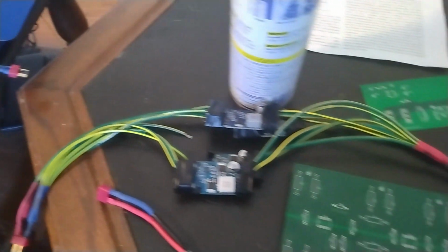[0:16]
Some people might say, Ivan, you didn't build a quantum computer, you built an NMR device. To those people I say, ¿por qué no los dos?
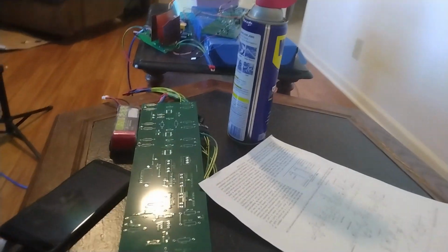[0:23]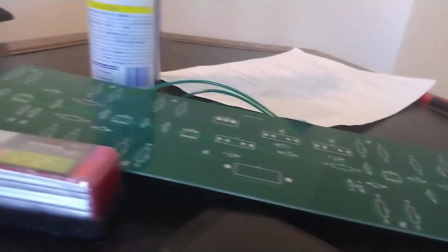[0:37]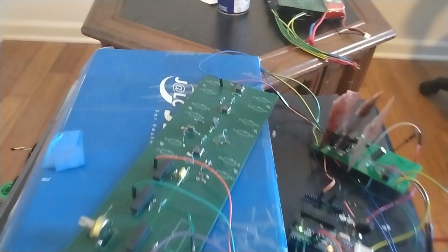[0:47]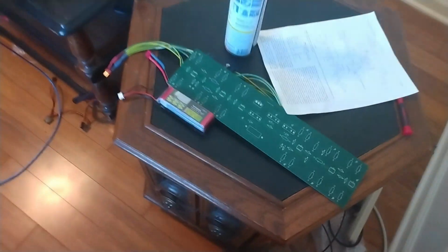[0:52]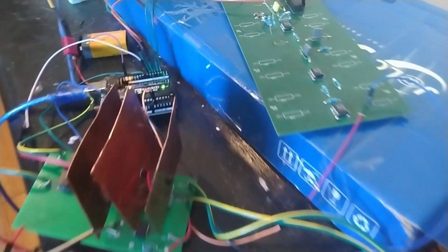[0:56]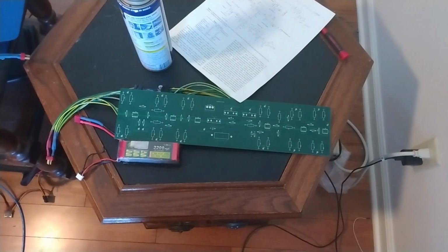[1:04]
Quantum computers you can build. There's a superconducting quantum computer, but that one requires liquid nitrogen or liquid helium. There's trapped ion quantum computers. Those require high voltages, dangerous voltages, and liquid hydrogen, liquid helium. And there's optical quantum computers, and those require single photon sources and optical tables, and they get pretty expensive.
But there is another type of quantum computer called an NMR quantum computer. In 2001, IBM used this quantum computer to factor the number 15 into 3 and 5. And it seemed doable to me to build something like this, but I wasn't sure where to start.
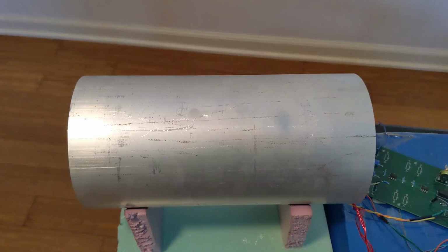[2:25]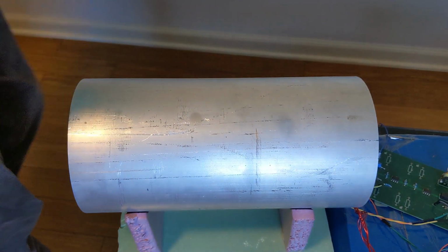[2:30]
So I looked around and I found this revolutionary paper by Professor Carl Michel. I hope I'm pronouncing his name right, from the University of British Columbia. He describes how to build an NMR device using hardware supplies and an Arduino. I contacted him, and he was happy to provide the software script to run on the Arduino. So the nuclei that we're going to be using as our qubits are the hydrogen nuclei in water.
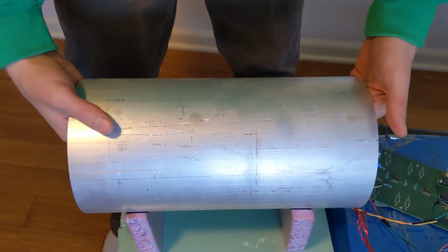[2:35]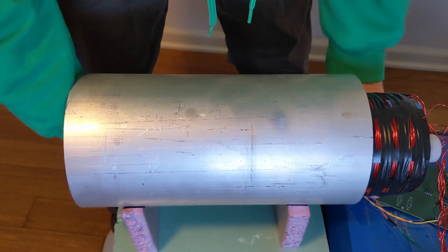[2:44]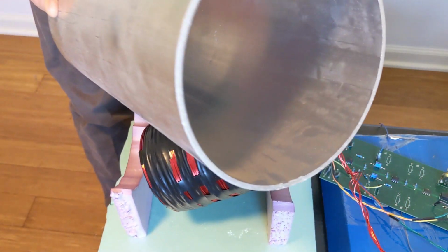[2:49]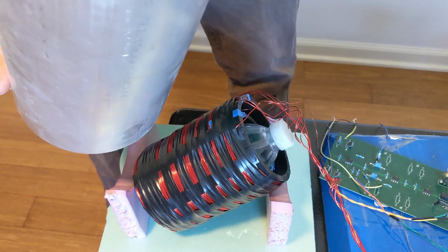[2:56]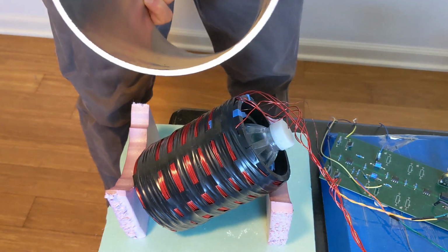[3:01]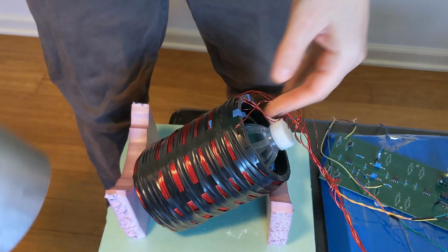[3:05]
So the water is held in this tank. Basically, it's a few layers in. The first layer is this aluminum Faraday tube, and that is about 2 or 3 millimeters thick. And if you look at the Q factor or the dampening for that, I think it removes like 90% of noise at 2 kilohertz. Don't quote me on that. And so, yeah, that helps keep the noise out.
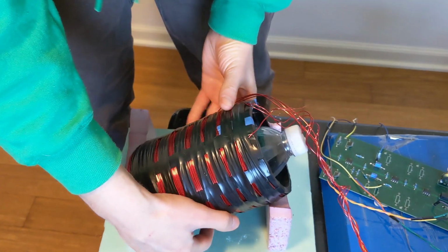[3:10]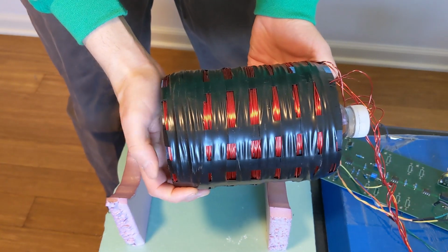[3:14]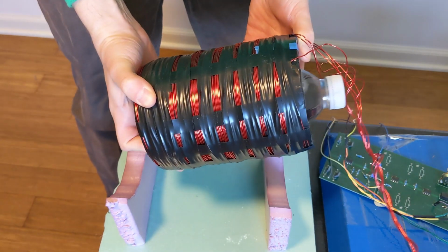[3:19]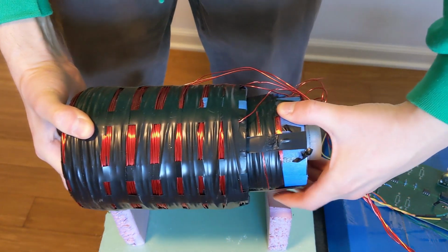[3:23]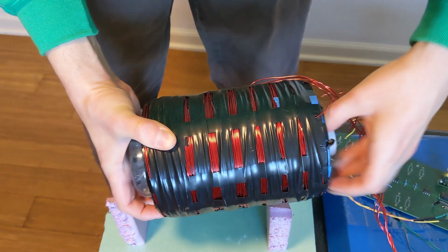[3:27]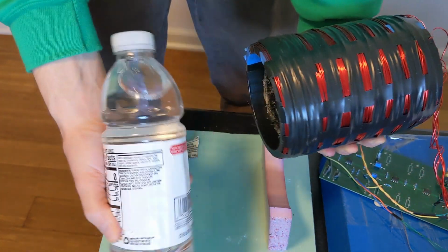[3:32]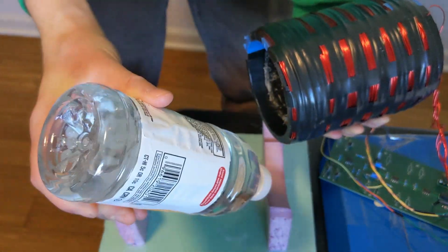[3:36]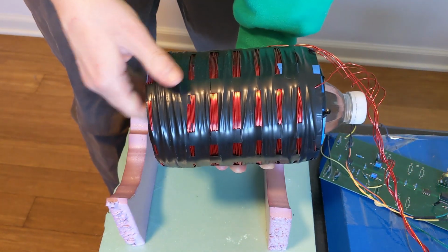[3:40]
Then we have the polarizing coil, which lines up the hydrogen nuclei. And then we have the transceiver coil inside of that, which we use to talk to the hydrogen nuclei. And then finally, we have the water, which the system is set up so that really any Gatorade style bottle will fit in here and it'll have the right amount of water, and you just kind of plug it in.
So the water at room temperature, the nuclei at room temperature, are scattered around willy-nilly. There's the Earth's magnetic field which helps line up some of the nuclei because they're kind of like tiny bar magnets, but they're still pretty randomized.
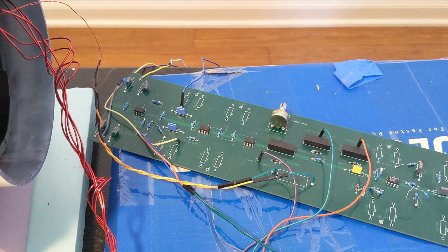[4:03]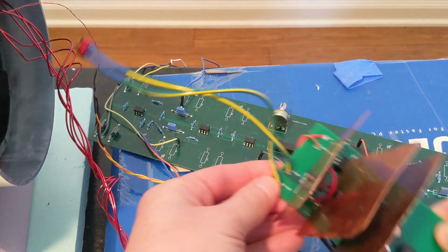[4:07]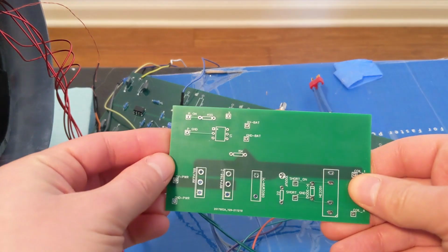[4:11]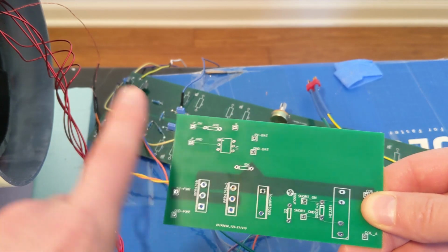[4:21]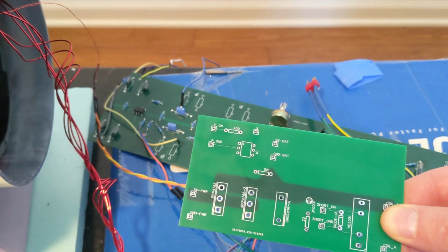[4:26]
So the first thing we do is we have this polarization coil, and here is a blank PCB for it. This section up here is for us to send commands from the Arduino, and then an optocoupler goes here, which basically just separates everything electrically so noise can't go back and forth, because noise is your worst enemy in this project.
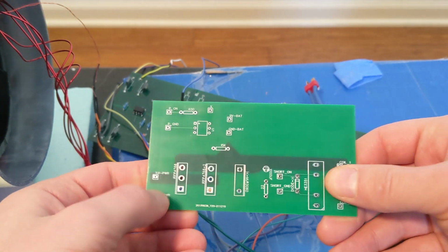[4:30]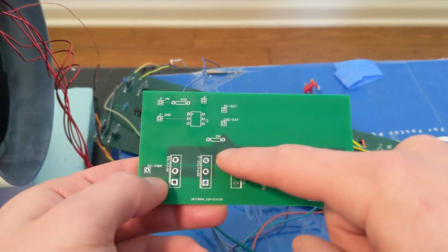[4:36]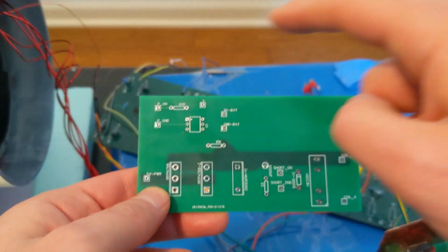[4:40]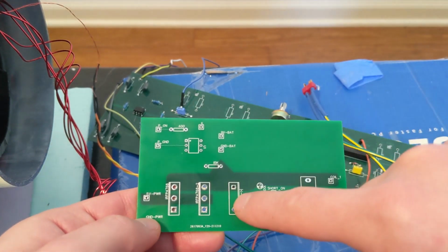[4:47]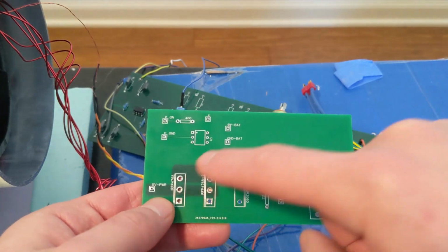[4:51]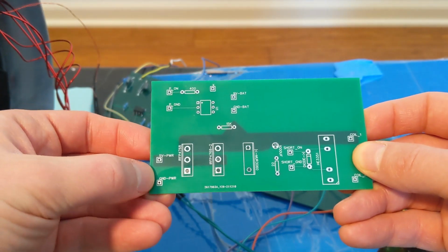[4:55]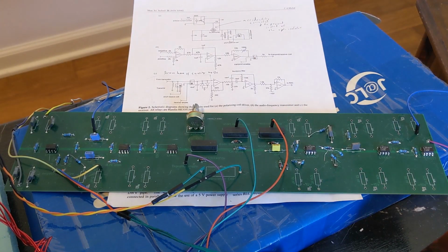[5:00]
And so then we put some FETs here. They're basically like electronic switches, and those switches let the small signal from the optocoupler from the Arduino control the large amount of power which we run through these thick copper lines, as you can see here. And that lets us take power in from our power supply, and then it sends it out through the coil.
So the way an NMR device works is we're trying to tell the hydrogen nuclei to flip. Those are going to be our bits, our qubits. And then we need to listen to the nuclei flip back. The nuclei are like tiny magnets, and they're mostly facing in random directions due to being at room temperature. They do slightly prefer pointing towards the Earth's pole, though, lining up in that direction.
So the first thing we do is we use the polarizing circuit to force them all to line up in one direction, and then we let them relax so that they all uniformly point towards the Earth's field. And when I say all, I mean, you know, more than before. And then we can strum them. We can kind of get them to oscillate back and forth using our transceiver coil. Now, this strumming can't be ham-fisted. We have to craft it carefully.
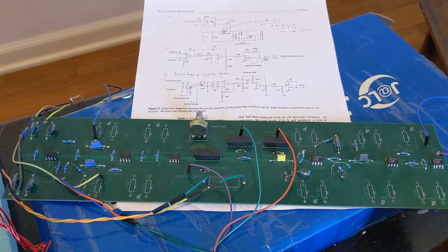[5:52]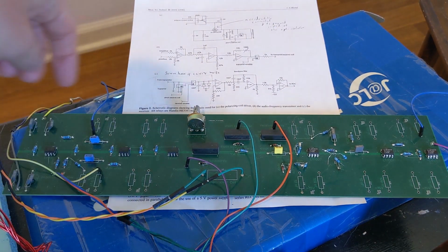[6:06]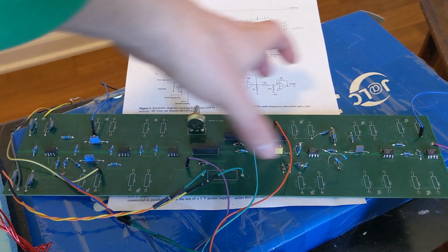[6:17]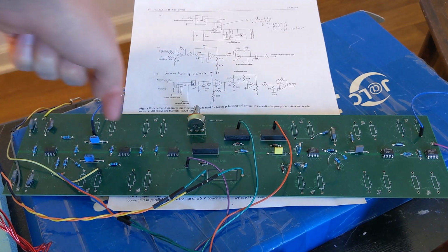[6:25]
So there are 6 op amps in this system. And you can kind of split up this electronic device into those 6 stages. So after we've polarized the water, the first thing we need to do is convert the Arduino signal into something that the board can work with. The Arduino can only do positive, so the first op amp lets us flip that into positive voltage and negative voltage. Then the second op amp, so the Arduino sends square pulses, and we need something rounder.
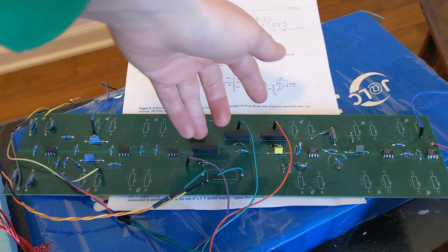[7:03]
So in order to smooth it out, we need to remove the high pass. So this is a low pass filter right here. The third op amp, with the help of this potentiometer up here, lets us tune how much power we have, so we can magnify or reduce the signal, so we can tune how much energy we put into our oscillator, into our oscillating nuclei.
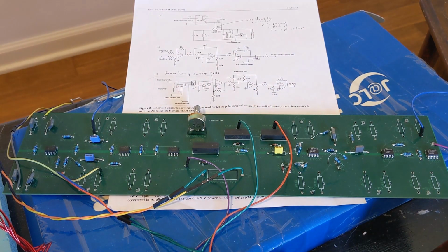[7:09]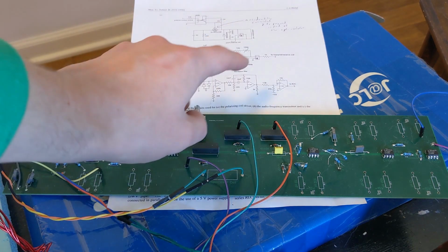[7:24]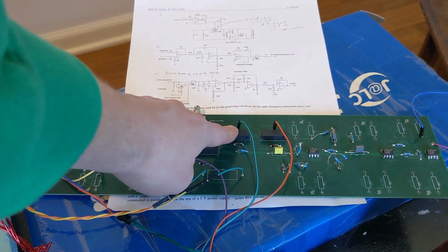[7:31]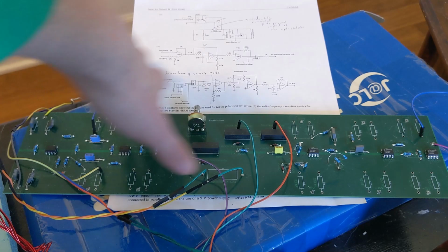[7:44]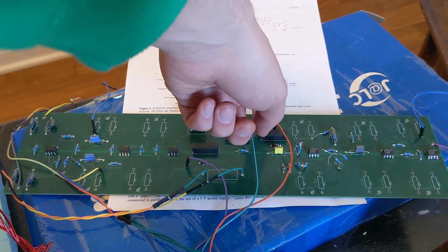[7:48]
These 3 relays right here kind of help us time everything, so it lets us connect the transceiver coil to ground, so everything's quiet, there's no background noise that gets built up in there. Then as soon as it's ready, we cut that, so we unground the coil. Then we open up the transmitter so that we can send information into the coil. And then we open up the receiver, and then we close the listener so that any noise back here can't get to the front of the system, and we listen to the response from the hydrogen nuclei.
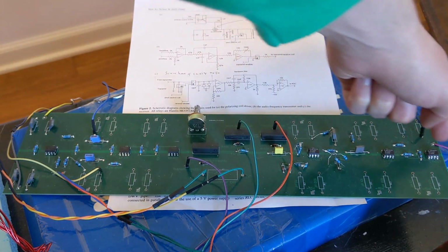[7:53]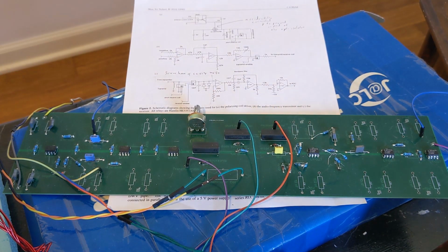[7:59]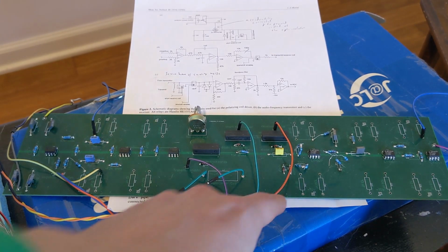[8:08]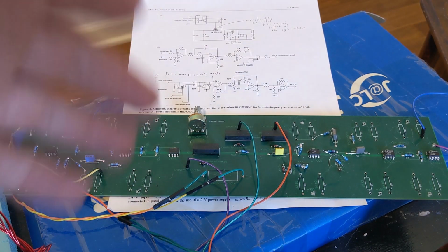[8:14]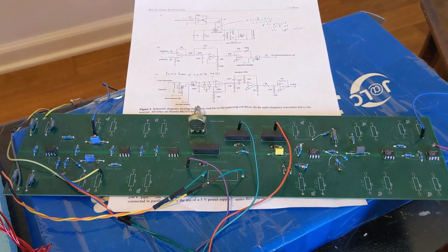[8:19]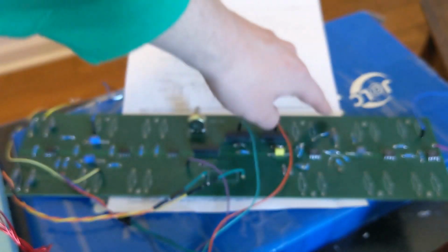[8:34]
So then we've got the 3 op amps at the end. The first one is a magnifier. So, we're listening to protons, and they're extremely quiet. We're not in a high magnetic field. So we have 1,000-fold magnification of the proton signal, of the echo, basically. Then we have a bandpass filter, because we've got all this noise, everything gets magnified 1,000-fold, but we only care about a small spectrum of radiation coming back out of the system, so we narrow that down with the bandpass filter.
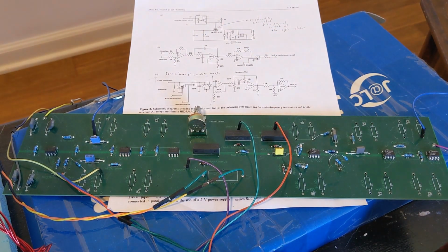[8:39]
And then finally, we need to change the plus and minus voltages back to something the Arduino can listen to. And so that's what the last op amp does. It kind of flips everything back and gets it in the right range.
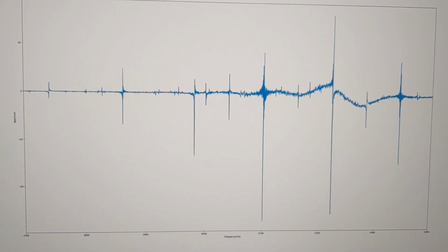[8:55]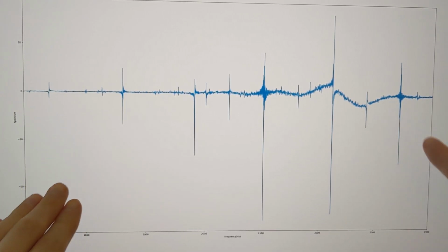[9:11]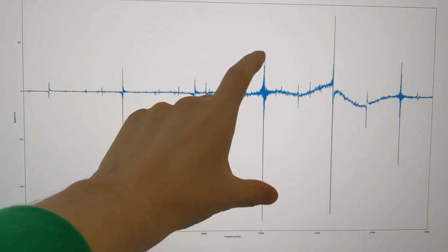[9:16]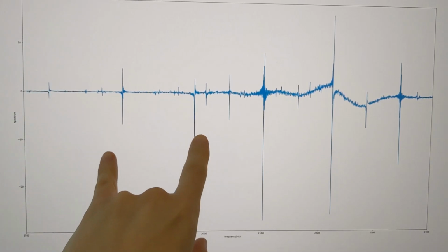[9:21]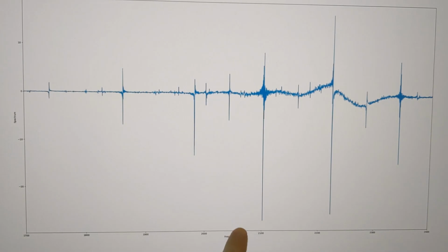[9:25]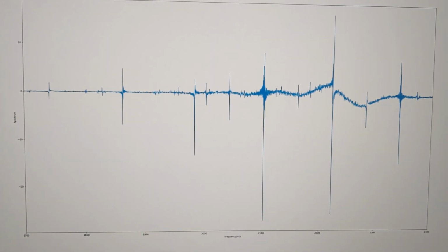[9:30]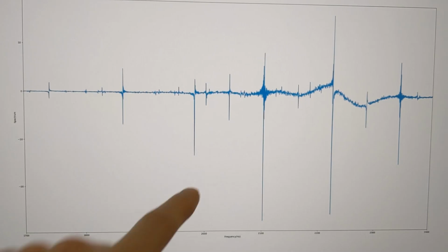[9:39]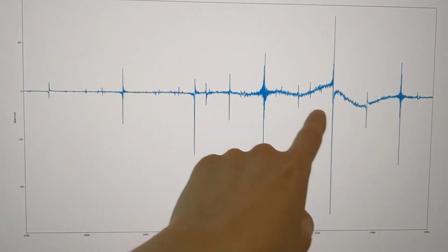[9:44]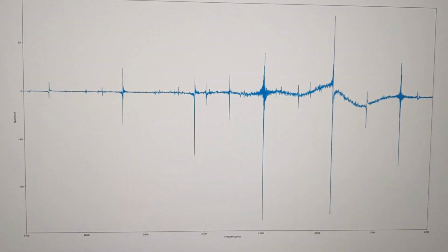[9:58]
So this is a plot of what the system looks like with the water in it, but with a magnetic field so that the water can't line up with the Earth's magnetic field. In the X direction we have the frequency, so low frequencies over here and high frequencies over here. And in the vertical direction, you get an idea of the amount of energy put in, or that we listen to here. So you see that we have these large spikes every 120 hertz, and that corresponds to the wall sockets, the energy that's all around us that powers everything. It's everywhere, and the noise from it gets everywhere. And then there are little bits of noise here and there too, because we're not in a lab setting, we're in my house. And finally, there's this weird curve here, and I believe that has to do with my polarization circuit. I'm not entirely sure where, but I think there's some sort of resonance there, and either way, it doesn't come up too often.
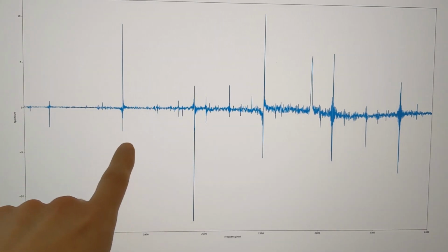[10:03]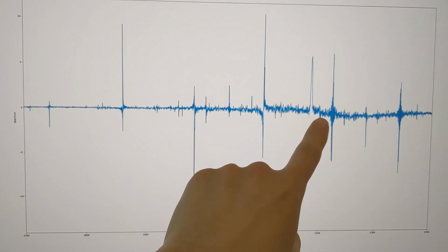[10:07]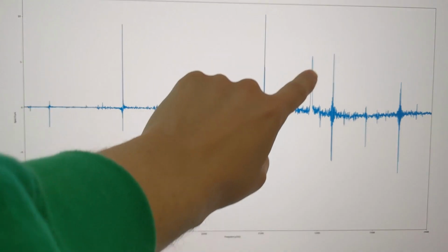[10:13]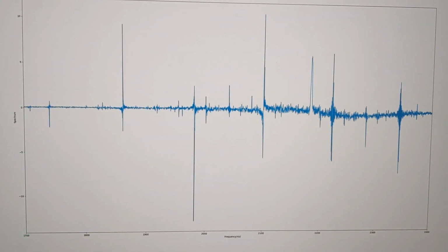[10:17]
And so this is what you get with the water in there and with no magnetic field, except for the Earth's magnetic field. And you see that everything basically looks the same, except we also have this tiny smooth pulse right here. And that is the hydrogen nuclei talking back to us. That is the bits unflipping and the energy being released and us catching it and listening to it.
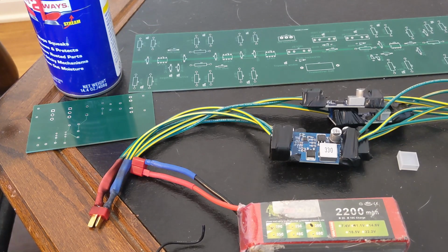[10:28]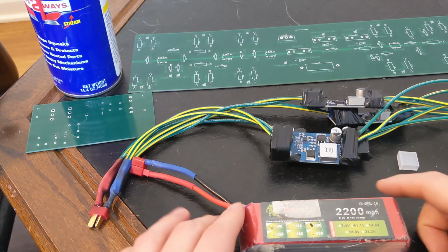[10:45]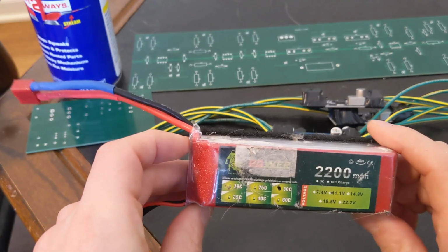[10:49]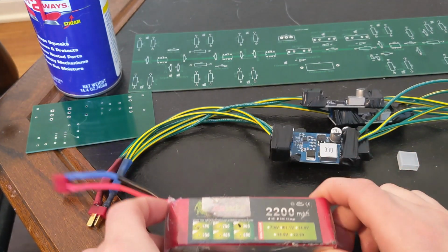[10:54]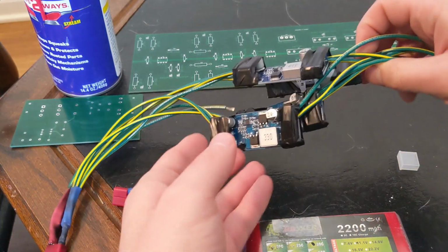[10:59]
So most of the challenges in this system boil down to noise. Originally, I was using a 5-volt power supply from a PC, a PSU, and that brought in a bunch of noise. Plus, there was some sort of weird resonance, which made things way worse. So instead, I switched to just a regular LiPo battery for remote-controlled airplanes. But this is a 3S, and so it comes in at 11 volts, and we need 5 volts. The system's tuned for 5 volts. So in order to get that down, I used 5-volt regulators.
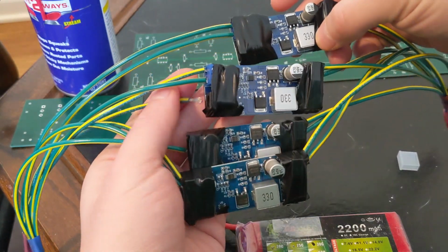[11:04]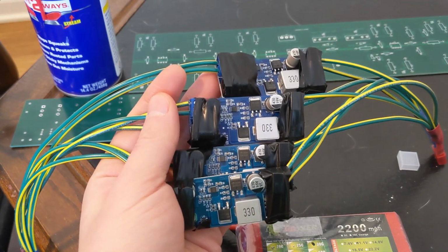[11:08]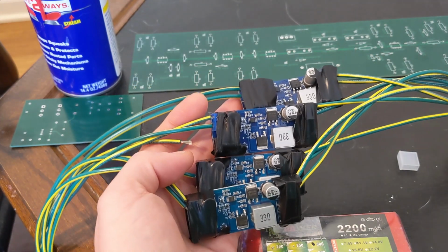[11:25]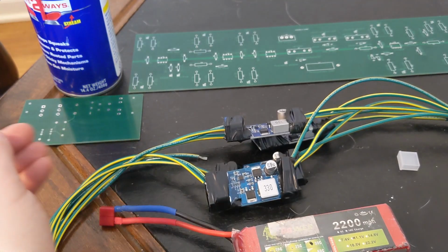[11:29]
Now, I need to reconnect this, but the problem with the 5-volt regulators is that they're rated for 5 amps, and we're doing 10 to 15 amps. I think the paper says 16 amps. And so, as you can see, I have 4 in parallel so that they can add up to 20 amp capabilities. Another issue I had was with noise.
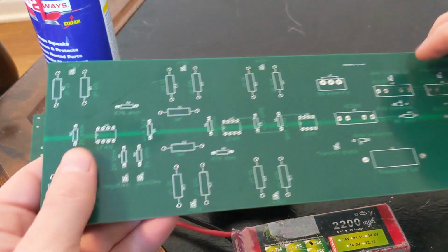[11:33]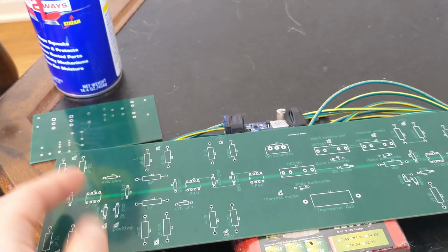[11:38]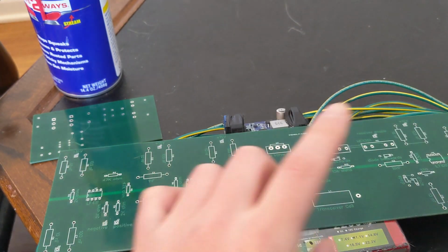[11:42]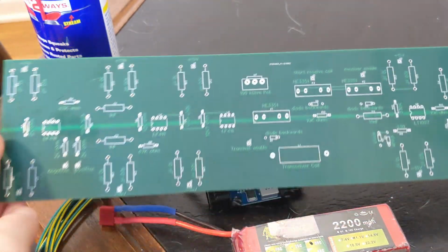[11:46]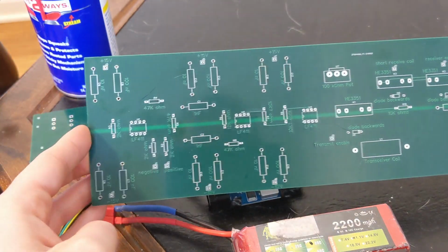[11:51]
So if you put this on a prototype board or breadboard, then you're going to have cables going everywhere. And each cable is a chance for noise to come in because they're basically antennas. So then I designed this PCB from the circuit, and it's got a couple of useful tips or things that help with the noise.
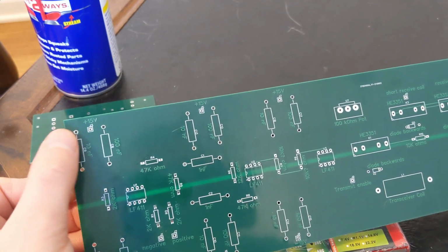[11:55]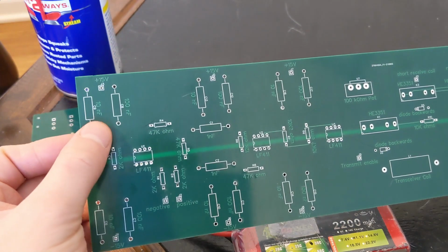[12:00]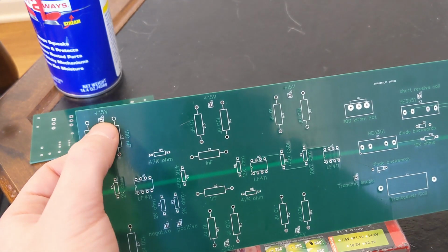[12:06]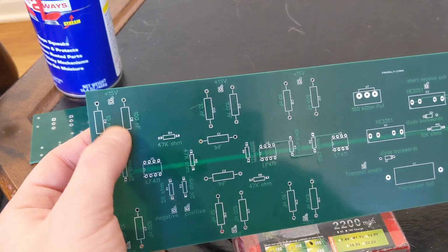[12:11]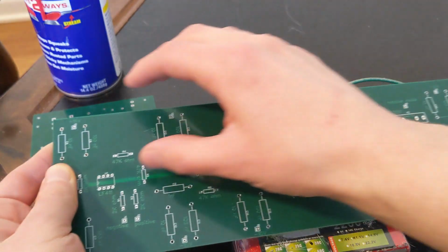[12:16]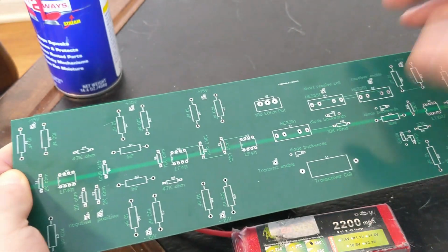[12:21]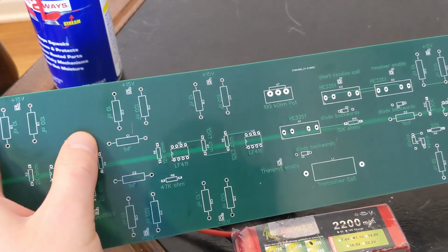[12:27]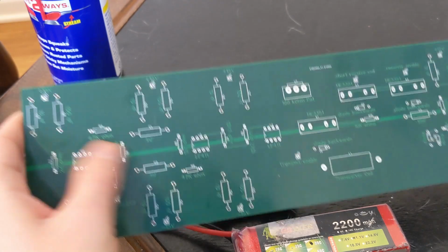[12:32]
One of them is, so here is the plus 15 volts that we need to run the op amps and the minus 15 volts. Basically those are coming in from long cables. So there's a 100 nanofarad and a 10 nanofarad capacitor right here, which helps dampen that out. Then in order to spread that out to all of the op amps, I have a large flat plane, which makes it hard for it to be an antenna because it's a flat plane. So the amount of antennability, I guess you don't know what to call it, is low, and it doesn't catch noise very easily.
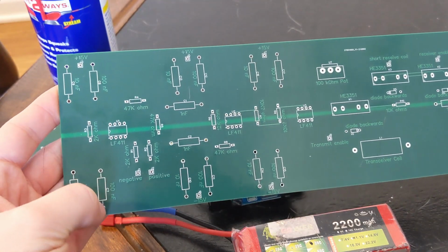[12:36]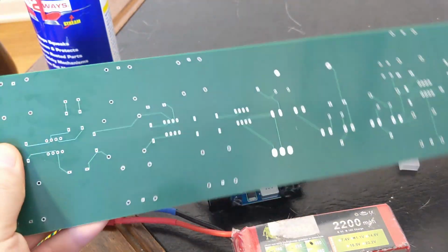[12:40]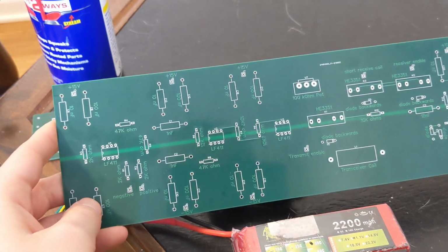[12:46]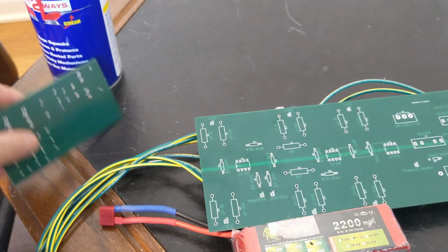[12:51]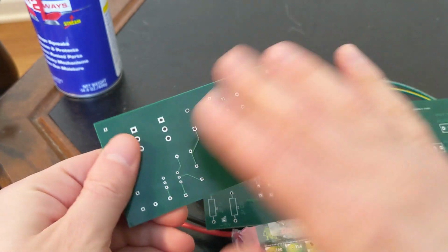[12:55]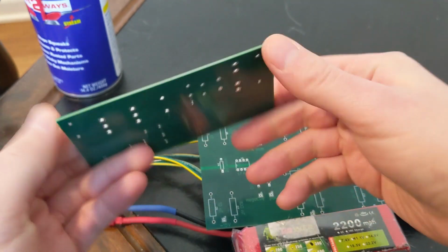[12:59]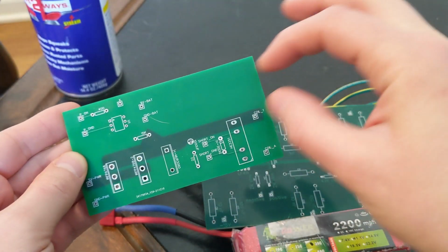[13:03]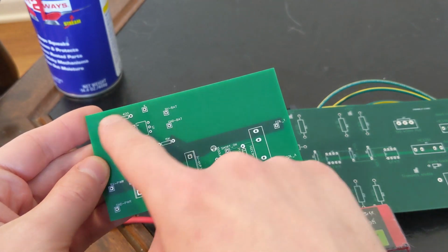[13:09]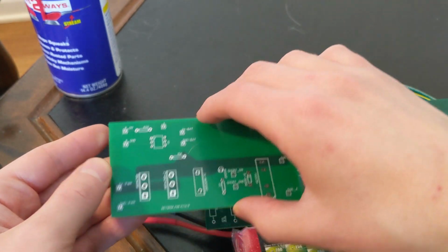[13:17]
And down here is the same, another minus 15 volt plane. Then the whole backside is the ground plane. So again, no antennability, no way to catch noise. And similarly on the polarizing PCB, we have a flat plane of ground, we have the large traces for the large amounts of power to run the polarizing coil, and this is part of the circuit where there's an opto isolator so that noise can't get in from the Arduino to the system or the system to the Arduino, back and forth.
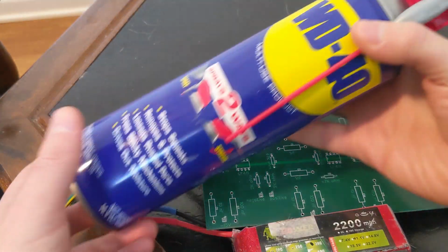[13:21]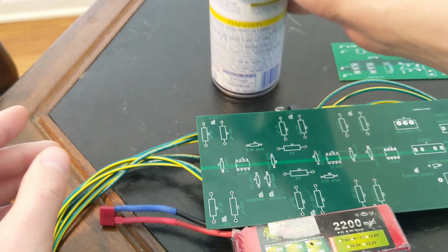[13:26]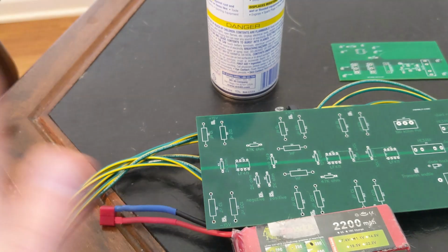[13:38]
One other thing is, as you can see, I have this can of WD-40, but in order to get an NMR to work, you need as many of the hydrogen atoms facing the same direction as possible, which means the field has to be as uniform as possible. If there's any metal in the house, I mean, this is wood, and you saw earlier the other part's wood too, so that helps. And I had to move some couches out of the way because they had metal in them. But there's a thing called shimming, where you move metal in on purpose and undo the issues that were caused by other objects by adding more objects. You play around with it until you've canceled out and you've got the magnetic field going as straight as possible.
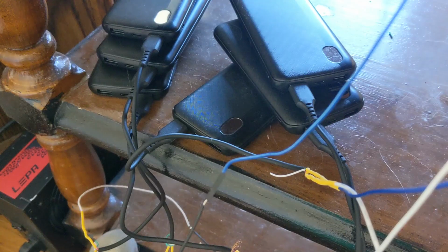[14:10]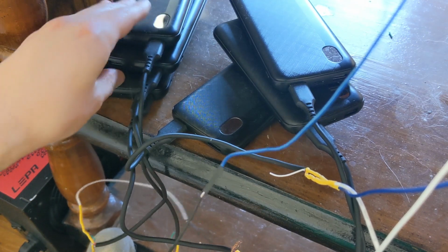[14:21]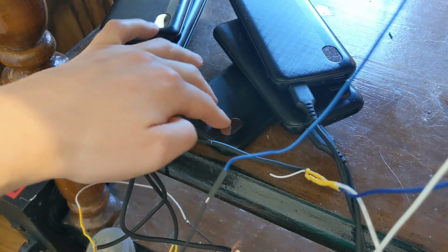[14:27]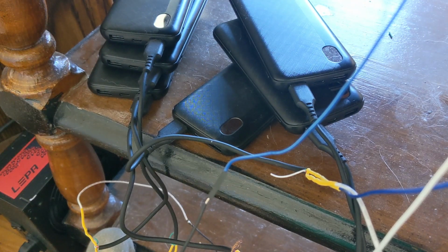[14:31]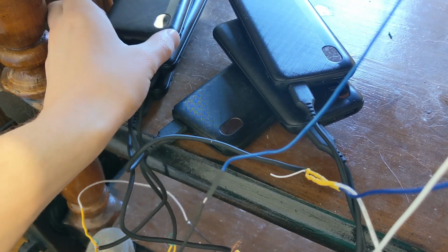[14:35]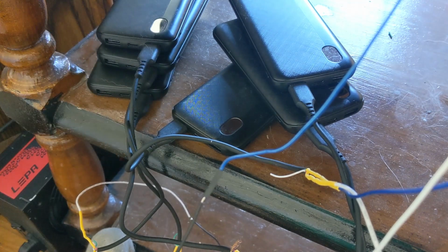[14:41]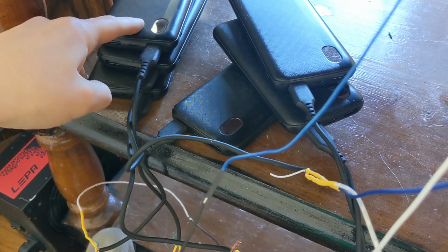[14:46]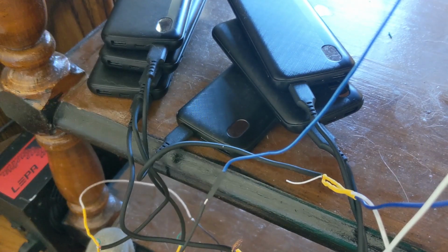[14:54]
I originally tried 15 volt power supplies to get the bias voltages, and they were also very noisy. So I switched over to cell phone chargers. As you can see, I have six 5 volts, so 5, 10, 15 plus and 5, 10, 15 minus, and they're all connected in series so that they add up and get the power back and forth. One trick though is I had to change the mode. Normally the op amps don't pull enough current for these to think that someone's using them, so they turn off. But if you hold down this button here, it changes modes to just putting out power no matter what. And so I have to set them up before I do any experiments.
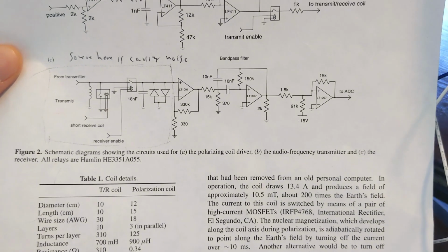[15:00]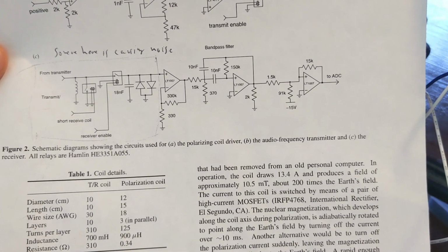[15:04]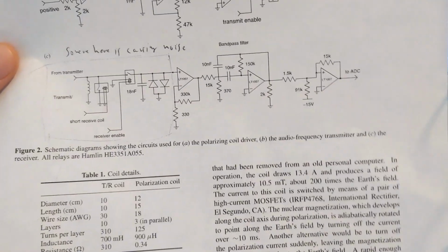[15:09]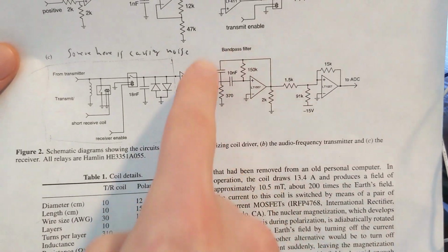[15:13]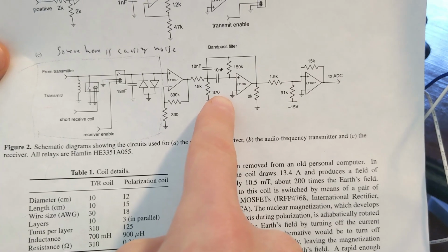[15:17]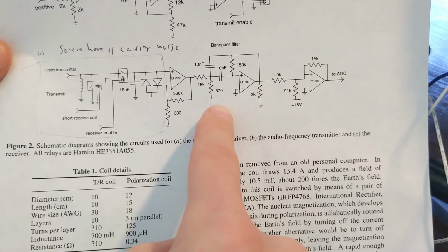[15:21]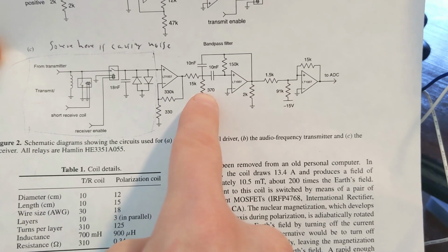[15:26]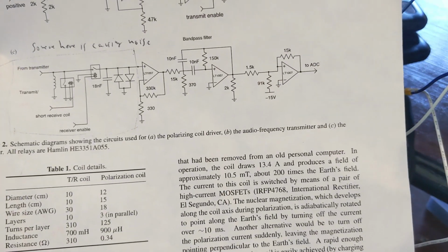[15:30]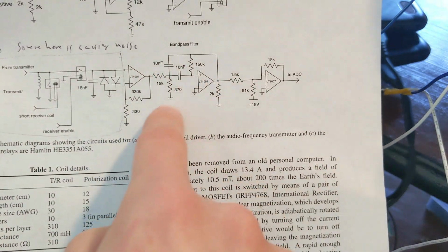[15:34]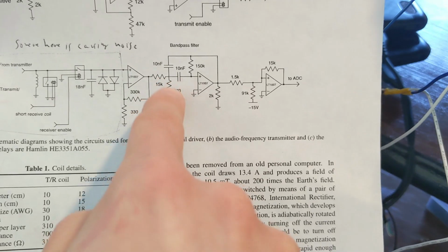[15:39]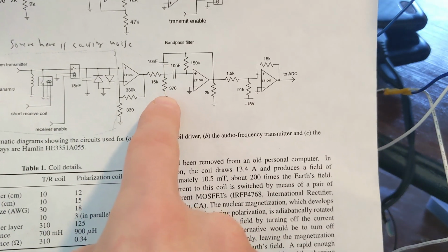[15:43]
One last thing is that this system is set up for the Earth's magnetic field strength on the West Coast, and I live in central US. So right here in the bandpass circuit, I changed this 370 to, I believe, 400 ohms. All you have to do is look up the Larmor frequency for hydrogens, pull out your phone and figure out what your magnetic field strength is in your area and plug that in, and then find a calculator for bandpass circuits, and then you can figure out what to change this one to. And I'll have a link to the resources I used for that in order to bandpass the right frequency.
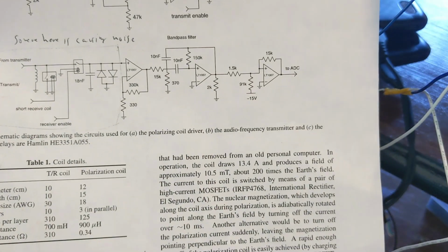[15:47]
So I won't be cracking any cryptography mysteries with this. But my end goal is to factor the number 6 into 2 and 3.
I'll have links down below for my PCB notes. I made a couple mistakes in the PCB, everyone does. No trace removing of shame, but I did have to add a couple of capacitors and resistors to ground planes that I forgot to add. I plan on making another video explaining all the physics of this system, so subscribe if that sounds interesting to you.